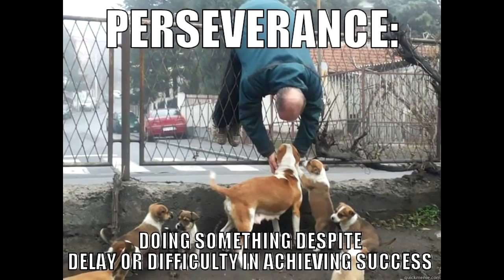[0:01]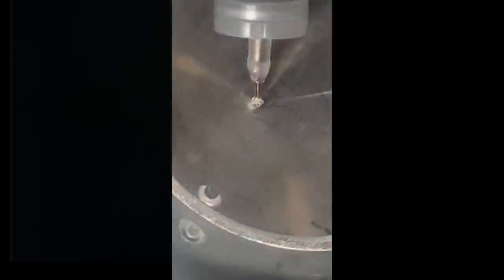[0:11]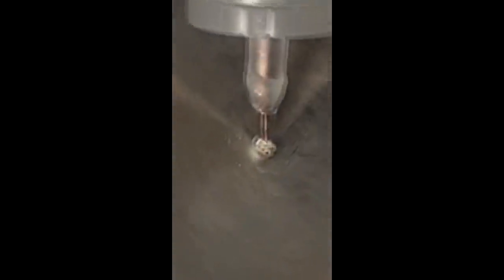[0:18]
This is a story of luck, desperation, trying to save money, and finally, success. Our goal was to make liquid microjets of liquid ammonia, and liquid ammonia with alkali metals dissolved in them. Now, this is a pretty harsh task on several fronts. Firstly, these materials are horrific to work with.
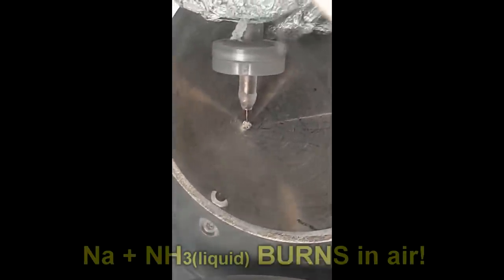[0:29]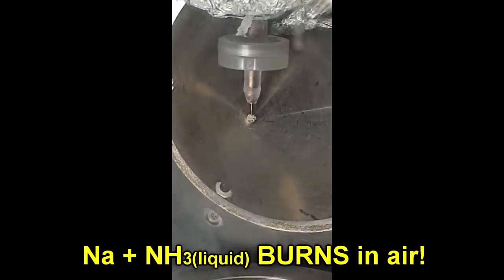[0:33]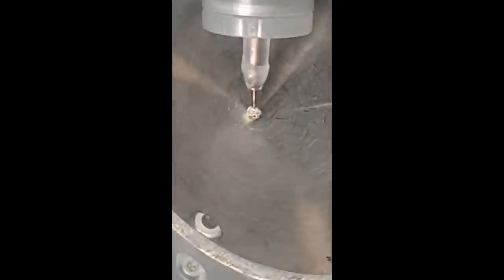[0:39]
They're fairly cold, cryogenic-ish type temperatures, minus 30 is when liquid ammonia liquefies. And they can be fairly chemically corrosive, in that all the alkali metals dissolved in liquid ammonia attack chlorinated and fluorinated polymers like crazy, which basically means no PTFE. So, we wanted something that would be easy to make, cheap, and reliable.
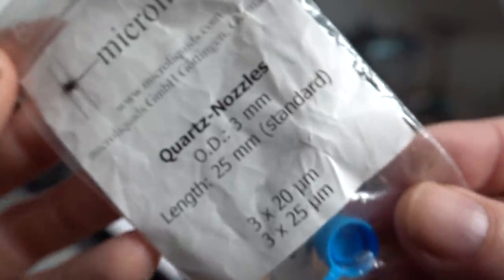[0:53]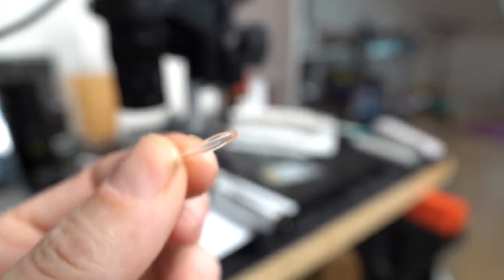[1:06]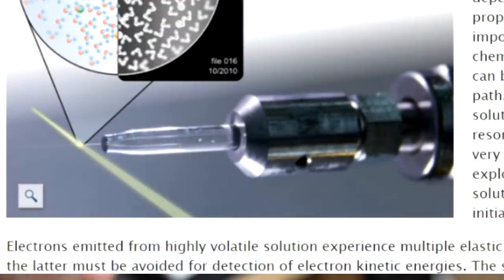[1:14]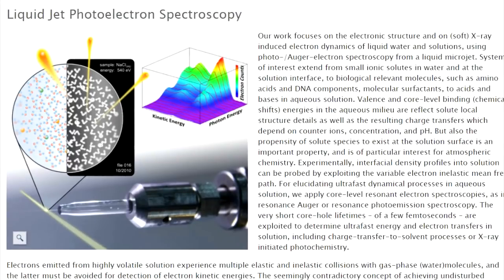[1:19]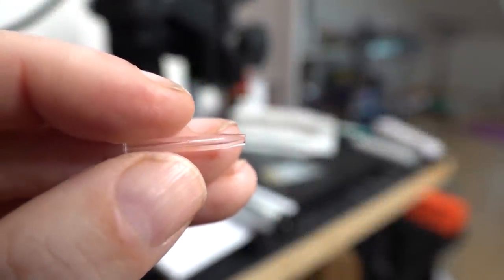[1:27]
Now, our journey started with some off-the-shelf traditional solutions for things like liquid water microjets. So these are commercial microliquid jets. They cost a few hundred dollars and they're very precise. And whilst they'll make nice microliquid jets, they're expensive. They're difficult to plumb, and the plumbing actually requires quite a lot of mass in terms of plastic sleeves, metal jackets to screw it all together, and so on. The bottom line is there was way too much thermal bulk there, considering we would have to keep this all cool by pumping a milliliter or so of liquid ammonia through this thing per minute.
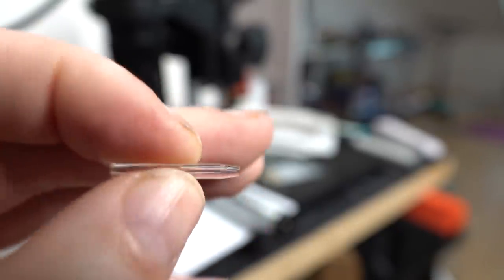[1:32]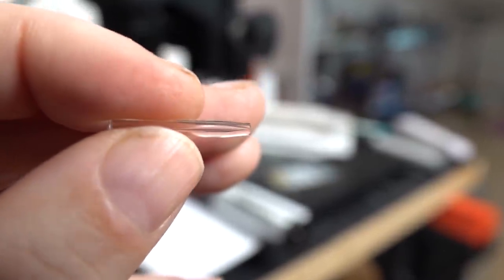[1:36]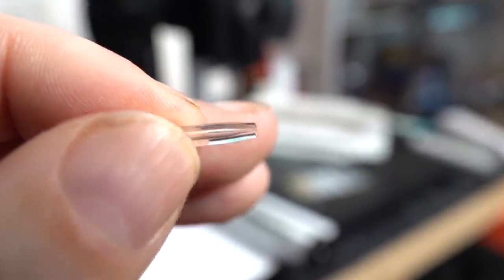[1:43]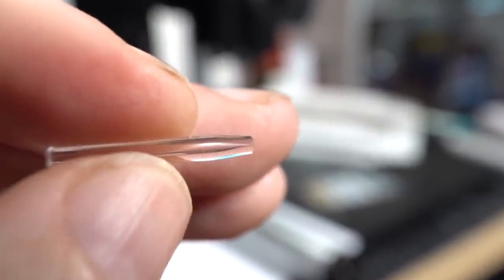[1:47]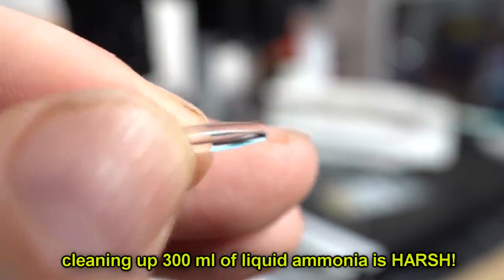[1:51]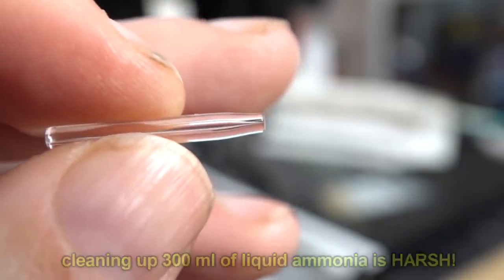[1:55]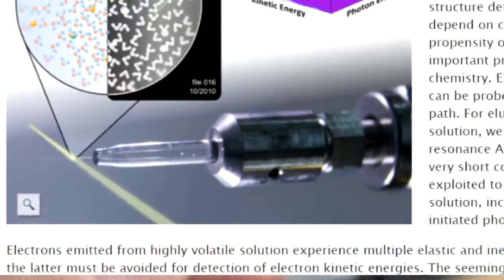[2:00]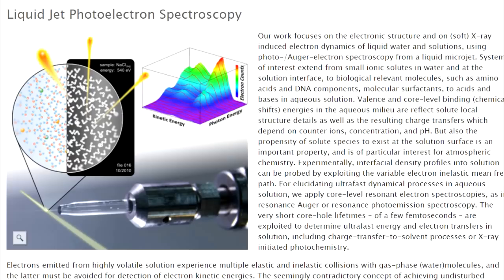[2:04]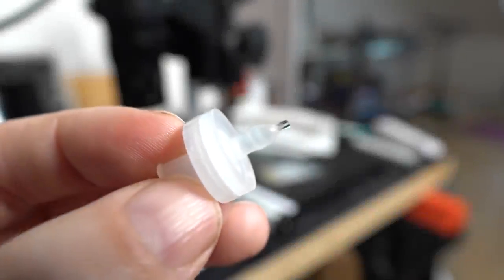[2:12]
Now, our key problem here was these jets are very prone to blocking. And that's a complete nightmare. Not only in that the nozzles cost a few hundred dollars a piece, and when they block, they're almost impossible to unblock, but you've also got a big reservoir of liquid ammonia behind this under a few atmospheres of pressure. Now, we did try all sorts of things like putting filters before these commercial nozzles, but none of it seemed to work. The nozzles always seemed to block within a few minutes of starting the run, which is just a complete non-starter. So out of desperation, we needed to get the nozzle as close to a filter as possible. So this was the solution that we came up with in the end.
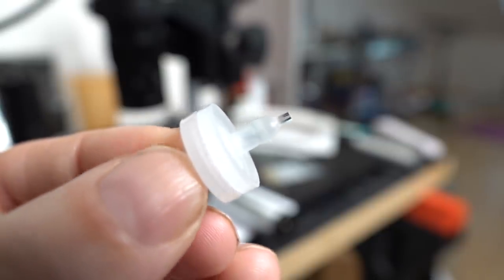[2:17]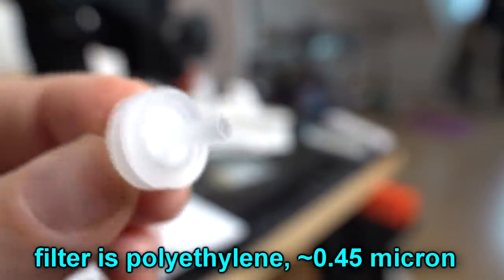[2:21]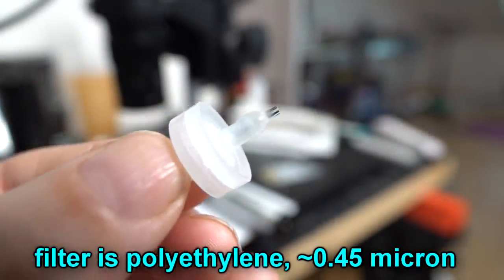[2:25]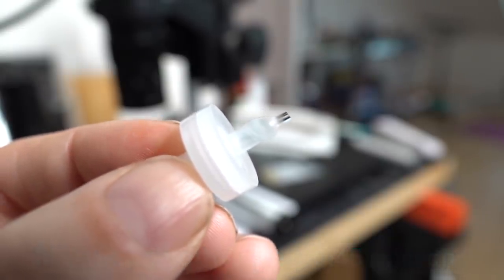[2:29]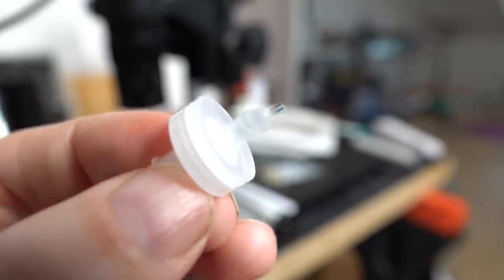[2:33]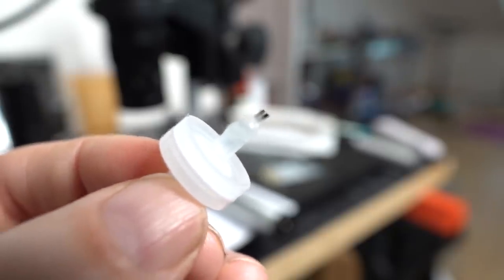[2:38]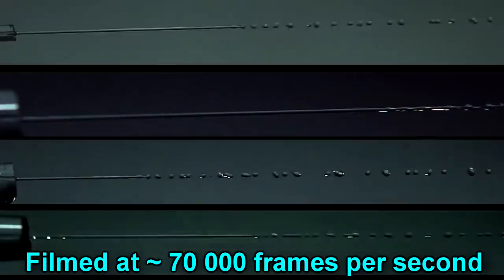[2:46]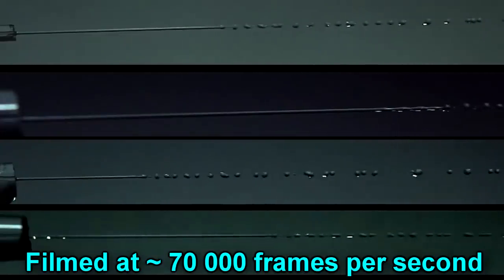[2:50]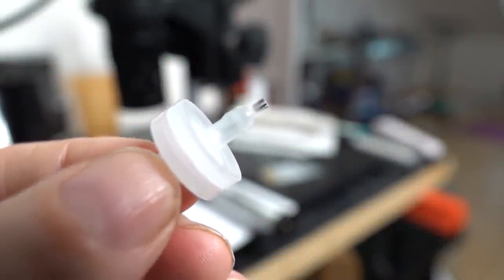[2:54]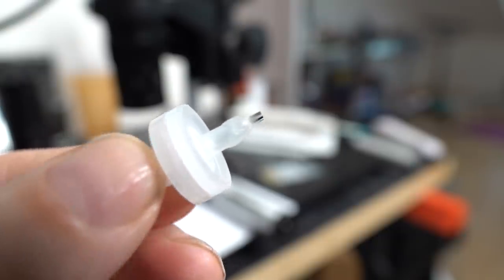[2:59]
It's a simple syringe filter, which costs a few dollars. And it's mounted directly behind a hand-pulled nozzle. And then it's just melted together. And with a little practice, they're fairly easy to make. They start 100% of the time. And you can make them pretty much to any diameter you want. Now, we found the best mix for our solutions here was about 100 microns in size, for which we only needed a pressurization on the system of about 2 atmospheres to get a nice jet, which is fantastic because all of this Luer lock stuff goes up to about 10 atmospheres and none of it was remotely fazed by the liquid ammonia or the liquid ammonia with alkali metals dissolved in them.
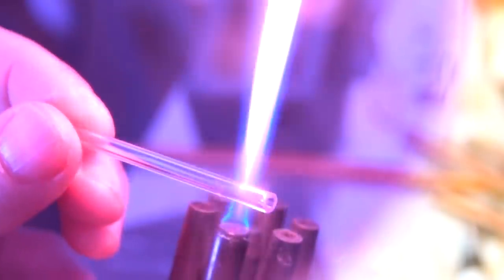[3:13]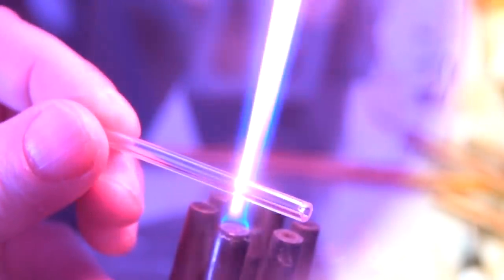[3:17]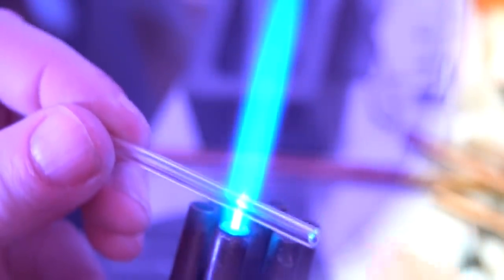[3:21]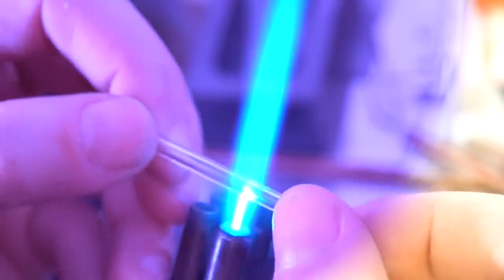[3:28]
So how do you make these nozzles? Good, so that's sort of what you want to start off with, is about 5mm tube glass, a silicate glass. It doesn't really matter what it is, because we will be drawing it down. It's fairly fiddly obviously working with something this small, but it's simple enough, doesn't take that much practice.
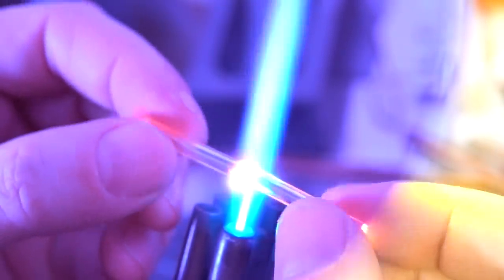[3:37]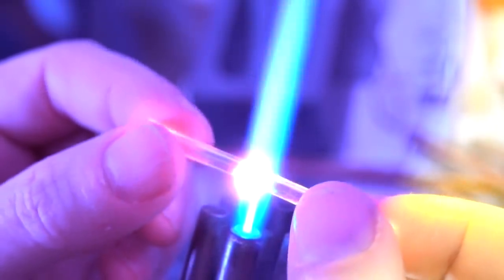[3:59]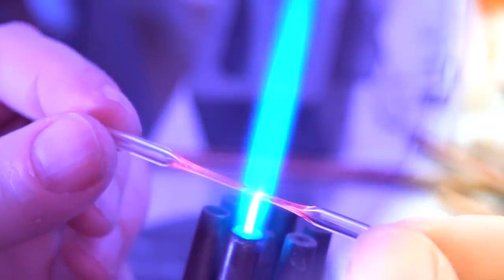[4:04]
So you just need to melt it up, push a little to make it thicker. Good. Let's get a little bit of a pull. And just let it contract under its own viscosity. That's nice. Almost there. When it's just about to close, it's about there, you just pull. Nice and gentle pull until it actually solidifies.
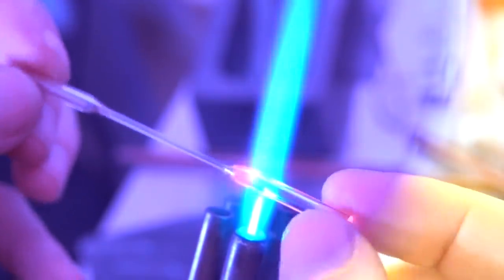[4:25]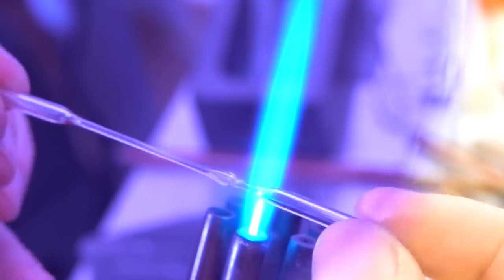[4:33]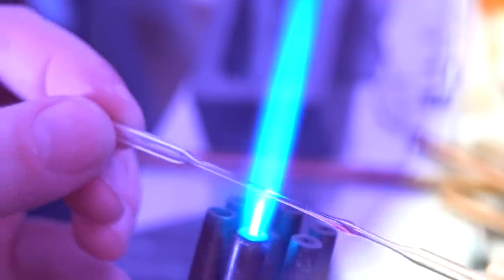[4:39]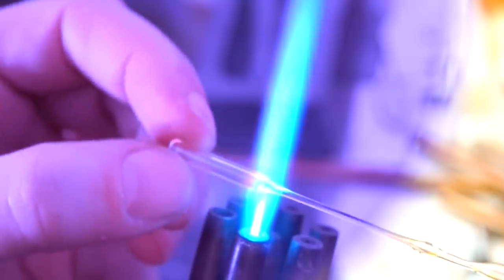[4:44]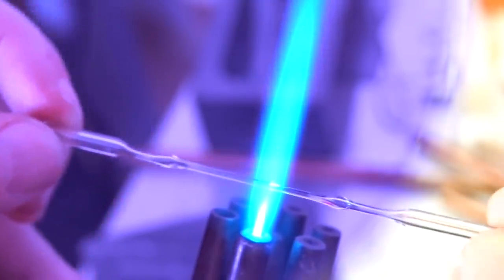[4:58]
Now you've got to round off the back side so you can actually mount these things in the syringe filter. You need to sort of melt it on the back side, give it a bit of a pull, let it contract down a bit. Oh, there, that's perfect. You've got a little teardrop thing. And you can maybe thin them out a bit in the middle. And then you just need one on the other side. Obviously it takes a little bit of practice, but after that it's really not that difficult. That's about perfect. Okay, there you go.
Super. Done. There I've got a calibration slide under a microscope, and that's 1 millimeter there. Probably the easiest metric that you can use for calibrating if you don't have a calibration slide is the human hair. So there's your typical human hair, which clocks in at just under 100 microns. Those are probably the easiest things to use as benchmarks for this. You know, generally you don't actually greatly care. There you go, there's a human hair.
So there's 100 microns. And we want to slice this guy somewhere around that. So you're going to need to put a scratch on here at about the right distance, at about the right position. I reckon it's going to be about there.
Good. So we've got one nice little scratch on there. So we need to lick that, break it, and now you should find that you have a capillary that's about 100 microns. Actually, slightly less, it's about 50. Cool. That's all there is to it.
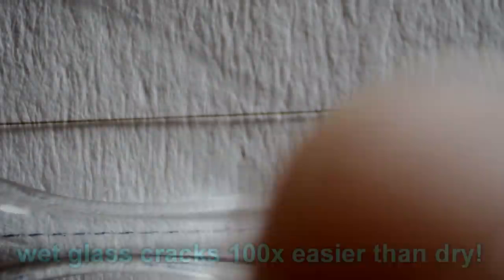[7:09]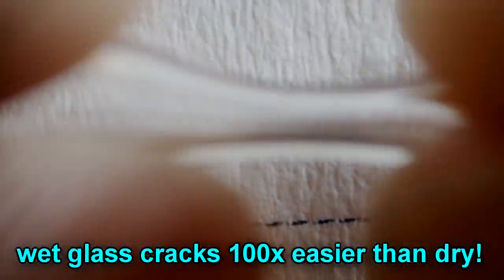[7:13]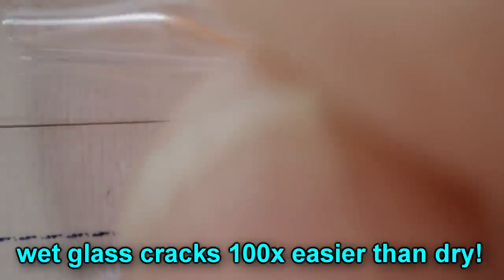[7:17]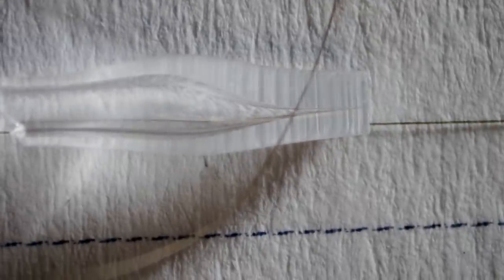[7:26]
Then, of course, you're just going to cut off the rear end, scratch on the back as well, somewhere about there. And you're just going to lick that. Oops. And just break it like that. And there you go. That's basically the guts of a fairly decent microjet.
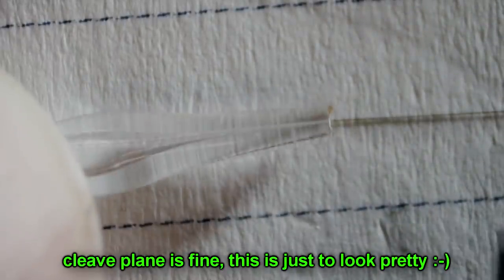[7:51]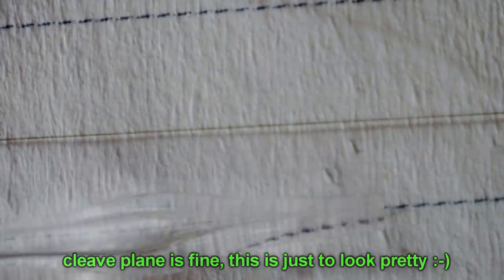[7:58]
I'm just going to lick that and break it away from me. Up there somewhere. And if you're keen, you can always clean it up a little. Like so. Good. And then, of course, you just want to do the same thing on the back side. So, single scratch. Break it away. And there you have a nozzle ready to go.
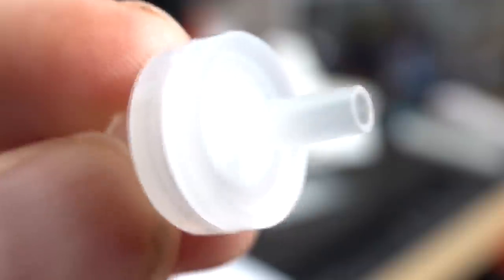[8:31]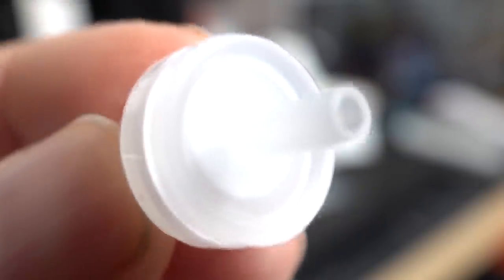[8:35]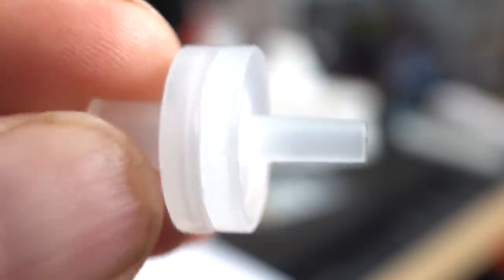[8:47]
So those are the syringe filters that we use. These are actually polyethylene, which worked out the best for the chemically corrosive stuff that we were using. So it has to take low temperature. These things will take low temperature. It's going to take moderate pressure. These things are rated up to about 10 atmospheres, which is pretty decent.
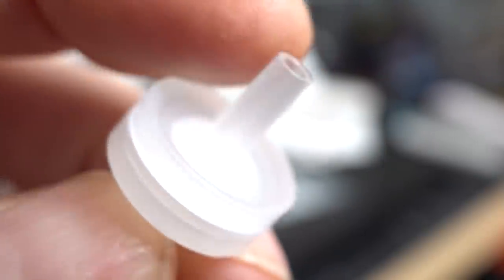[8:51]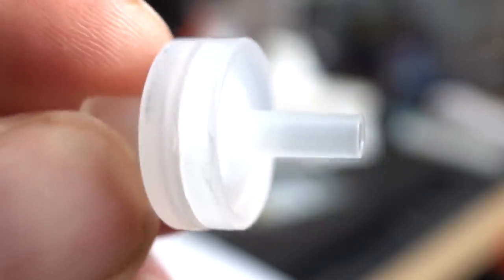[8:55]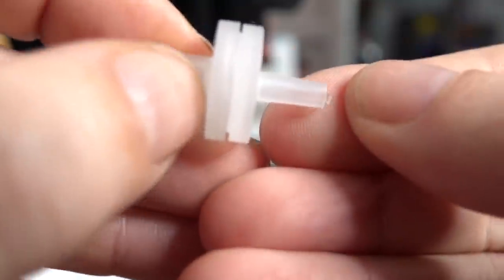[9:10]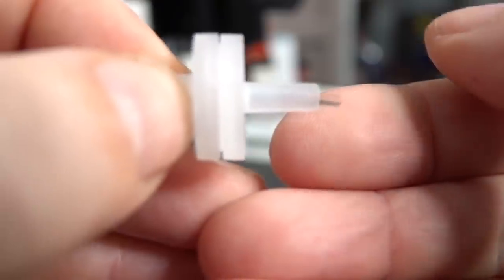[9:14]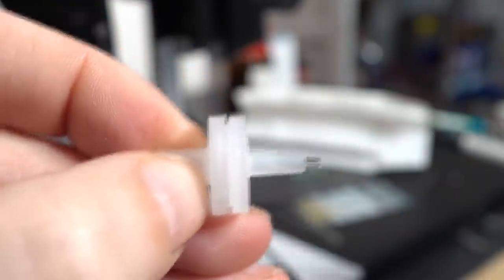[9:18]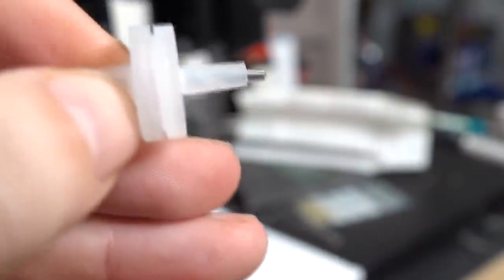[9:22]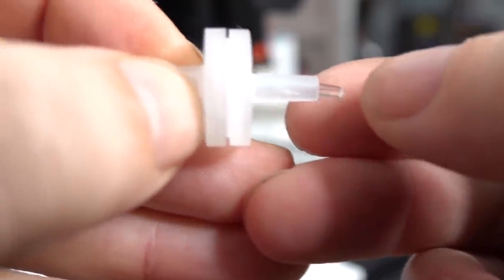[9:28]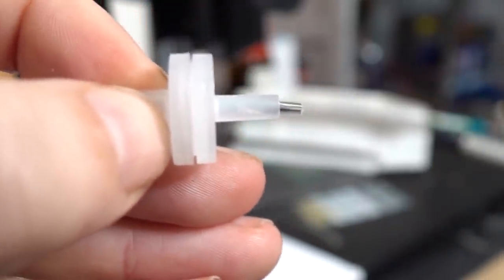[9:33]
So if you've got the filter here and the nozzle here, obviously there's not many places where the nozzle can pick up crap. So first thing you've got to do, I'm going to clean that off as best as I can, get all the grease off your fingers and the such like off. And I'm just going to ease them out there. That's not too bad. Here comes the tricky bit. Doing this on the camera view, it is super tricky.
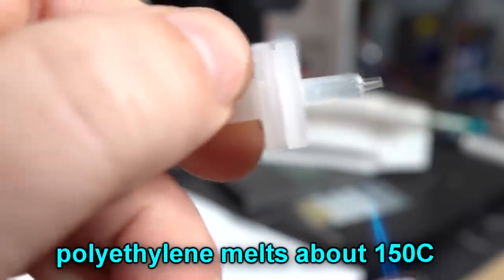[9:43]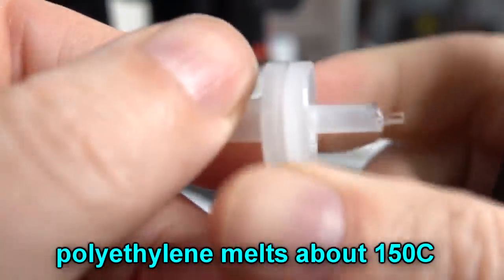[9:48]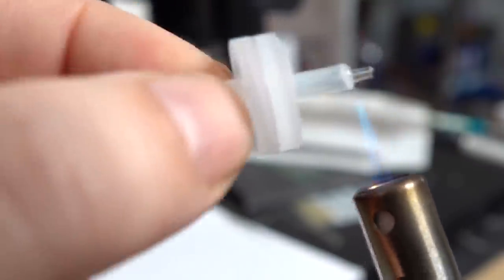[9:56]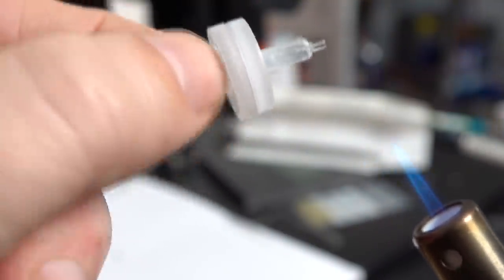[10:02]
In the first instance, I'm just going to melt it a little just to tack it on. There is melting. If you're doing this with your eyes up close, you actually do this really well. Doing it like this is tricky because I have just no depth perception. And doing it like that. There we go. That's beautiful. Yeah, that's nice. So at that point, I'm going to focus up close.
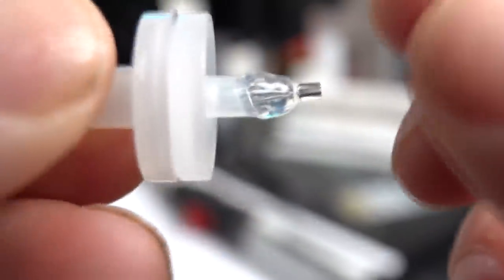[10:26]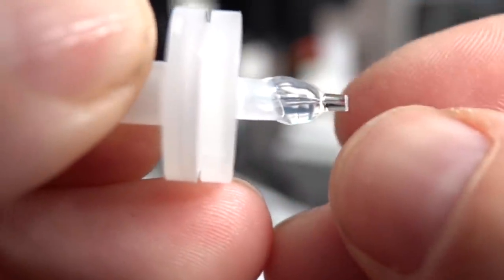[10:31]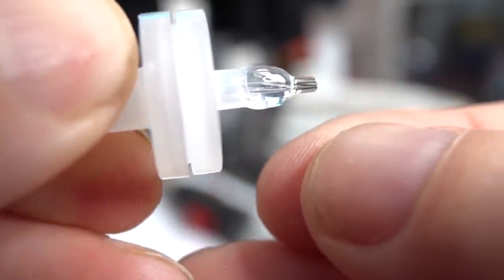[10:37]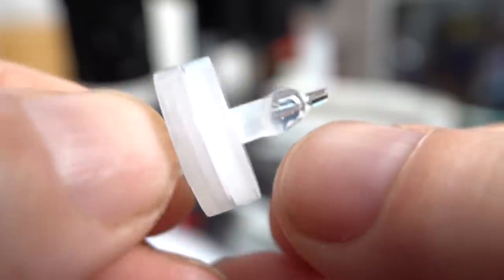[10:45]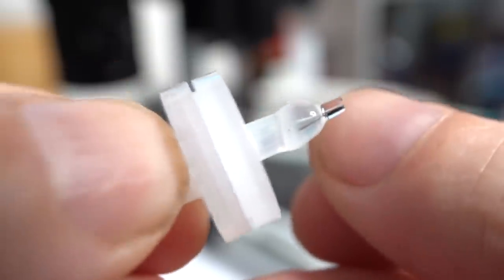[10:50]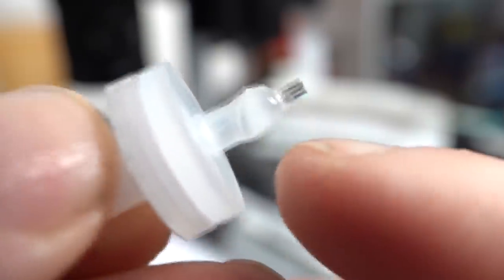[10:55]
Good. So at that point, I'm going to focus up close so you can see that it's all melted, the polyethylene, and it's gone all clear. At which point you can just strain it up in the nozzle. And then you just wait for it to cool. It takes a few seconds for it to cool. You'll know when it's solidified because it'll go opaque again on the stalk here. So now you have a filter directly on to a nozzle.
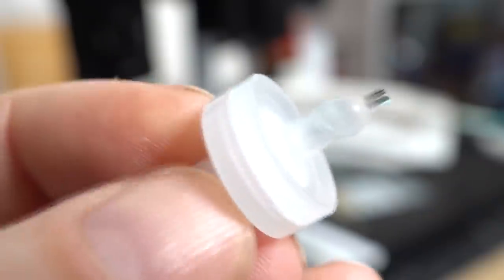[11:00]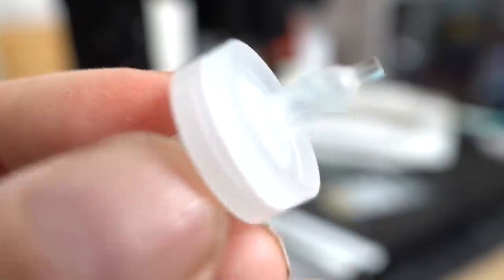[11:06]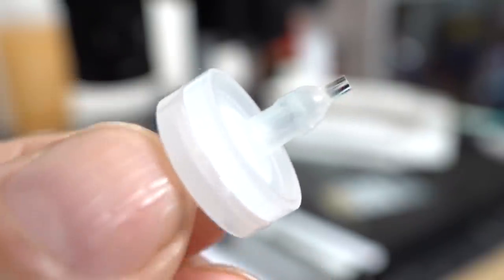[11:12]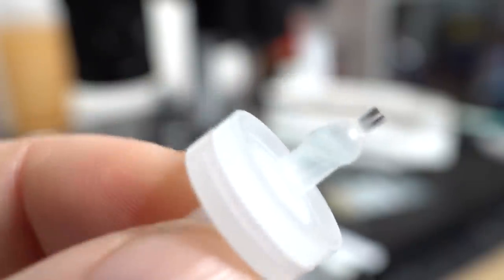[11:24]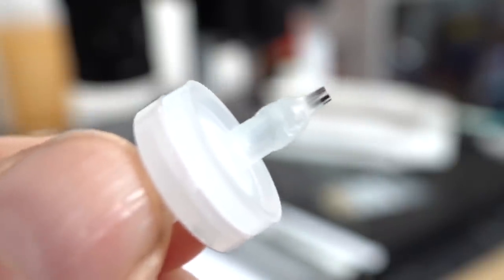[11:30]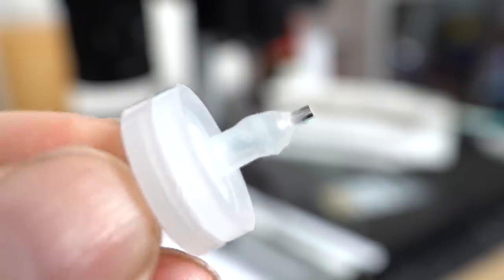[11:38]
And these we've happily run up to 5 bar. At that point, there's just no point in running them any higher because it's fit for purpose at that. And we've never really had these things fail. They've got a very high success ratio. Cool. So that's basically how you make these integrated nozzle filters. And they're dirt cheap to make, of course. It's the cost of the filter, which is, you know, a couple of bucks or something. The cost of the glass, which is essentially zero. And they work... Well, we've never really had one of these not start.
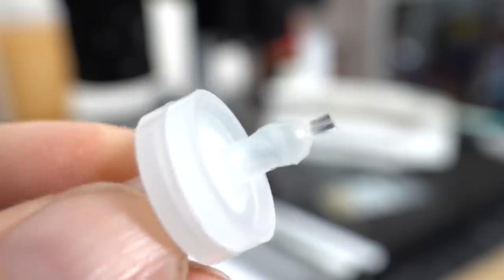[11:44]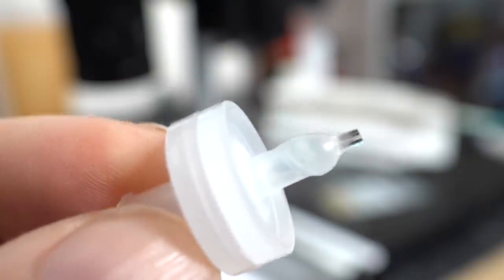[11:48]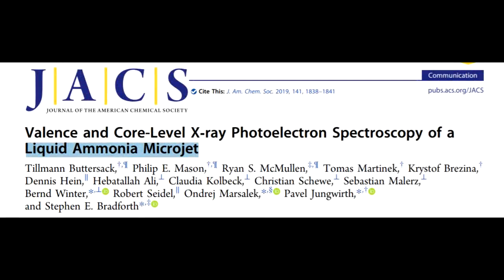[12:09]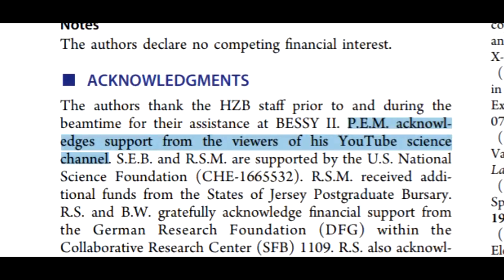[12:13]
They don't really ever clog. So, yeah, they're absolutely fantastic. And when I say resistant to corrosion, I really mean it. These things I've actually used to make microjets of liquid sodium potassium alloy. So this might seem like a bit of a weird video. I mean, really, how many people have an interest in making uncloggable microjets? Well, this cute little bit of technology is actually at the heart of at least one of our papers in print and a few more upcoming ones.
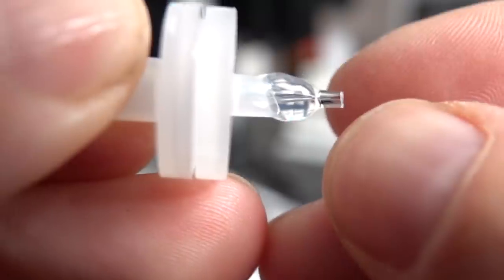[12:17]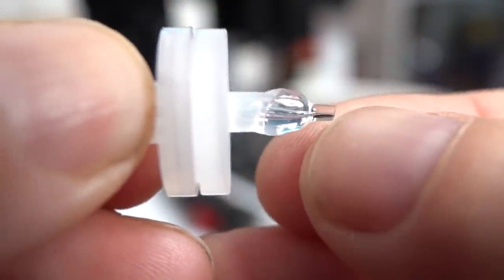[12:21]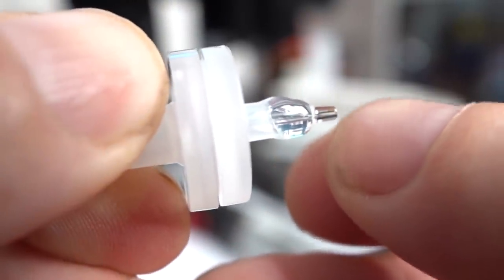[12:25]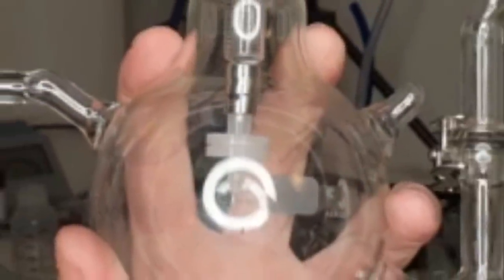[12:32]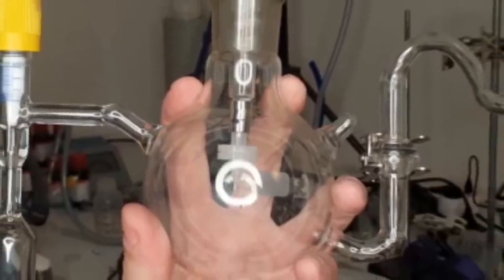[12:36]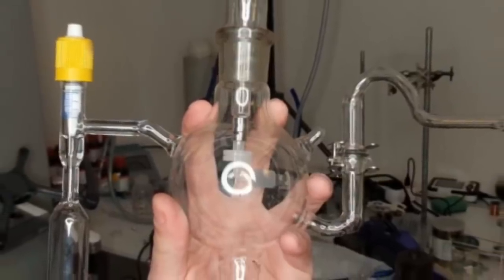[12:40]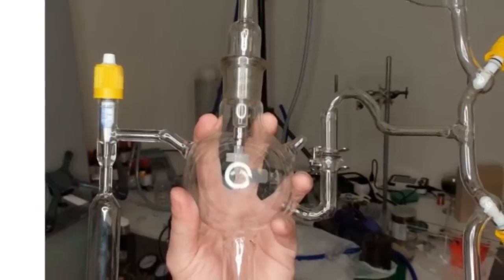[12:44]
Basically, if you don't know how to do this and have to work it out for yourself, like we did, there's a lot of work in doing this. Simply having a tutorial like this is like striking gold for half a dozen people around the world. And this really isn't that much of a hypothetical either. We actually had some folks visit the lab the other day, and they wanted to make some microjets like this, so I just showed them how we did it. At the end, he very gratefully shook my hand and said, "You just saved us 6 months' work."
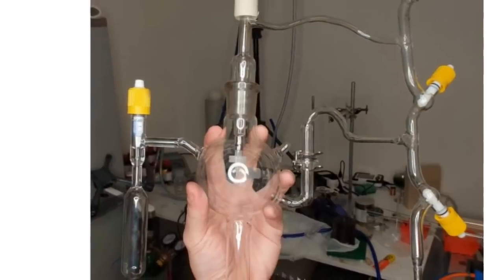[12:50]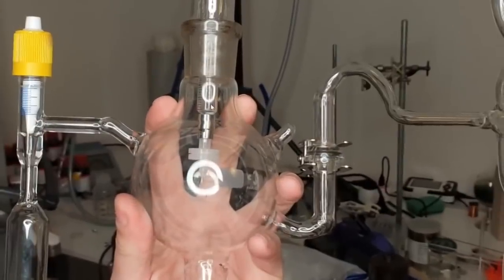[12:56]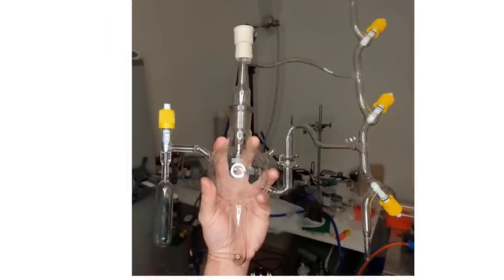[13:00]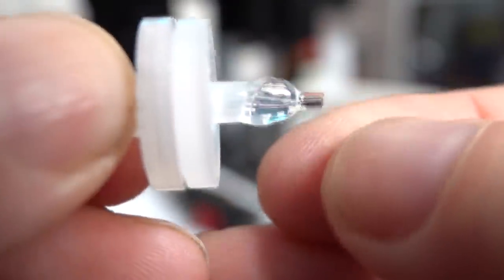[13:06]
But for everyone else, it's not gold. But I hope it's at least mildly entertaining. Because this is what real research looks like. There are no instruction manuals for making something like this. Well, until now, of course. And yes, at some point in the future, I will actually be using these to make the world's smallest flamethrower.